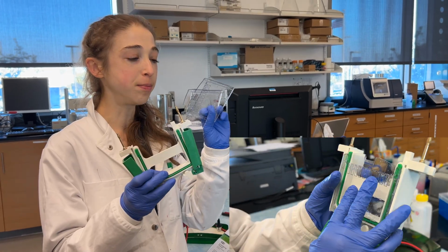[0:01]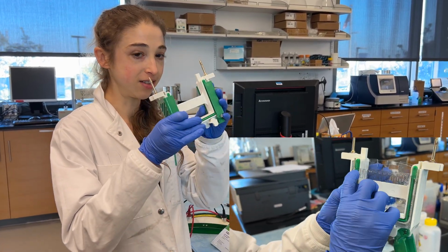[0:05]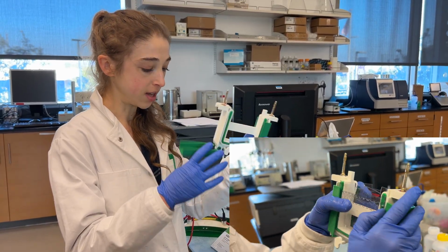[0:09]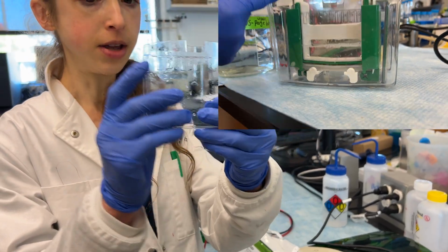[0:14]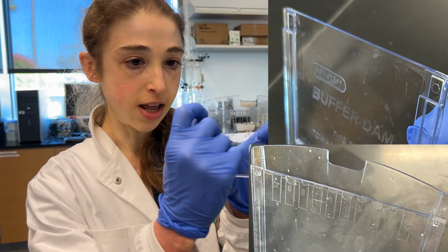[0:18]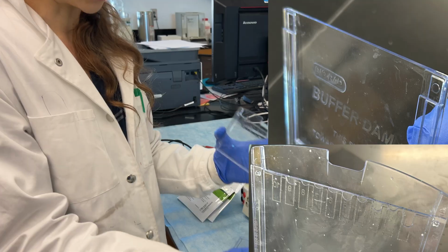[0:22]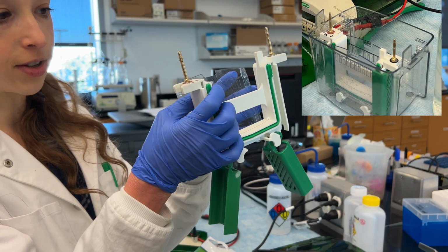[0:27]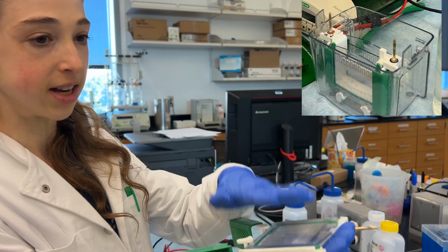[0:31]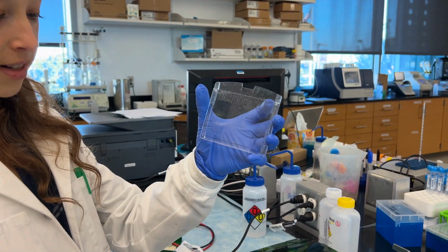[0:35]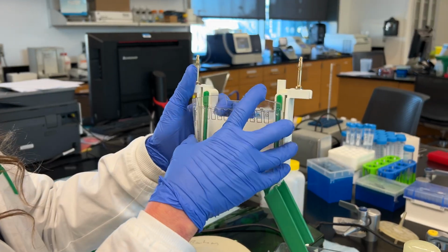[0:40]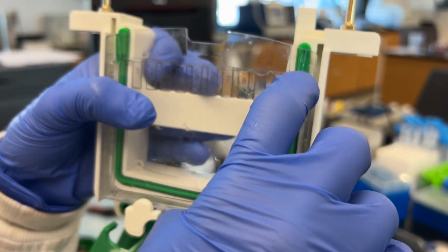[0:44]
When you're setting up your SDS-PAGE gels in one of these Bio-Rad Tetra cells, they have a tendency to leak if you don't set them up properly. So when you have your gel cassette or your buffer dam, you'll see that one side is going to be tall and the other side is going to be short. The top of this short part needs to be flush with the bottom of the rubber part. So you're going to have a gel on either side, or one side's going to have a buffer dam and one side's going to have a gel. In both cases, the short side is going to need to be in, because that short side needs to align right with the bottom of here. This is really important for preventing leaks.
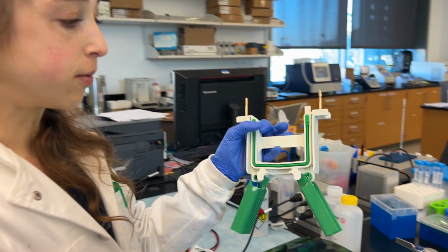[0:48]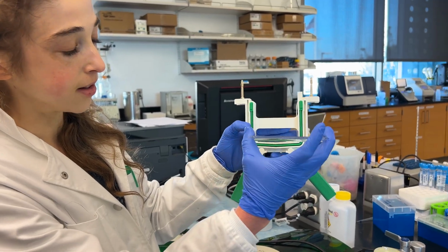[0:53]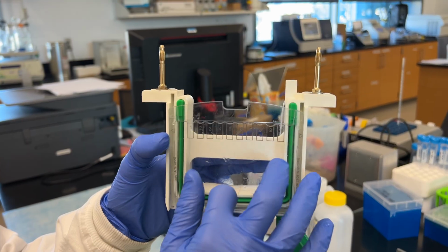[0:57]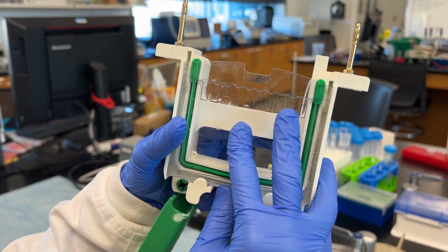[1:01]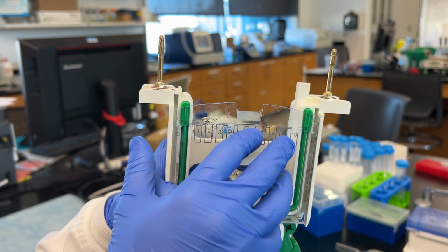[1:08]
It's hard to coordinate when you're doing both sides, but what you want to do is angle it down. So angle it down so you're here, then push back and push up. So you're right below the line. So you're right at the line. If you push too far, you're going to go above it and you're going to break the seal.
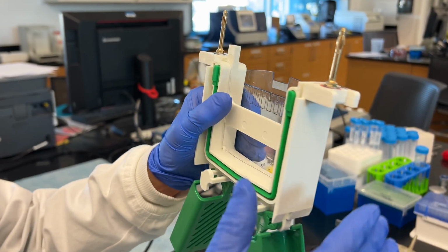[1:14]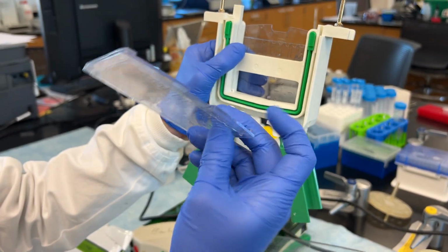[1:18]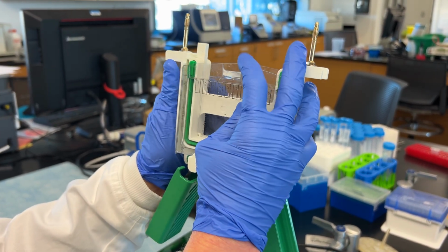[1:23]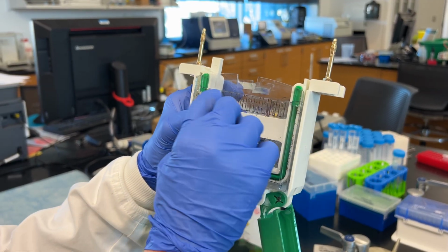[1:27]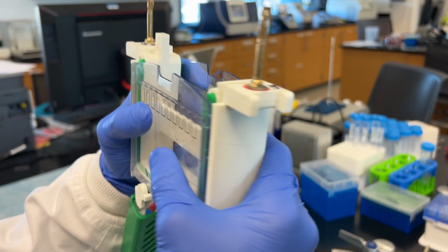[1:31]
You want to keep holding this really, really tight, flip it over, keep pressure on the back. Take your other one, short side in, angle down, push back, push up. So again, going right to the bottom, the top of the short side is right at the bottom of that green plastic. Check the other side to make sure that one is still good too.
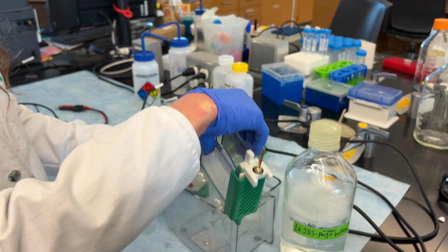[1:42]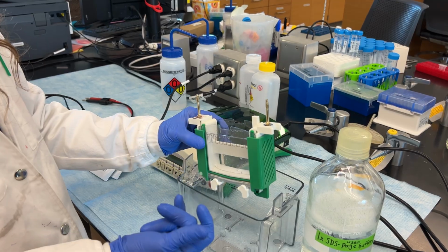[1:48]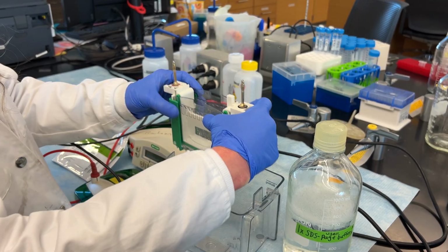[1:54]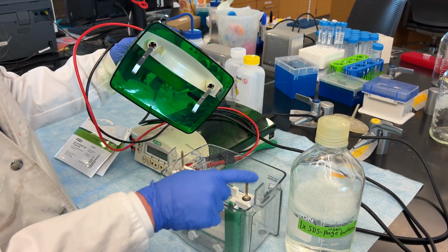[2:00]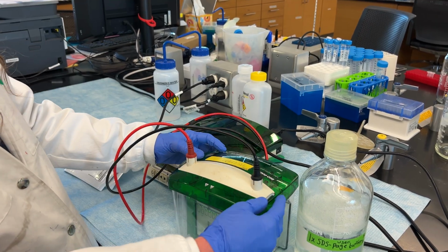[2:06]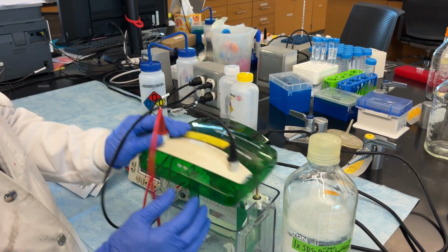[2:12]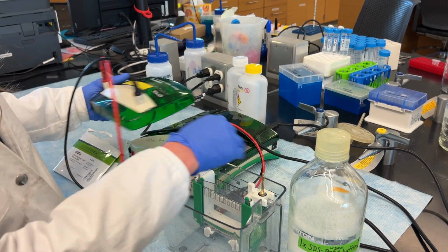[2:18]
And then you want to clamp it. When you stick it in your box, you want to make sure that you're sticking it in the way that's going to be most convenient for you to load. So you should strategize beforehand so that when the box is in, the red is to the red and the black is to the black. These electrodes are going to need to be in contact with these, so you want to make sure you have your gel in the right orientation. If I had put this on the back one, well, now the gel wouldn't fit, the lid wouldn't fit, and if I flip it around, now I've got red to black. The reason why I like to do it with the one closer is that it's easier to load.
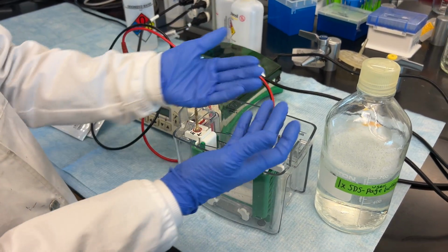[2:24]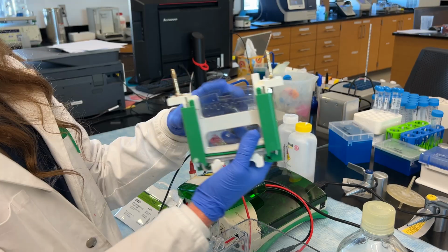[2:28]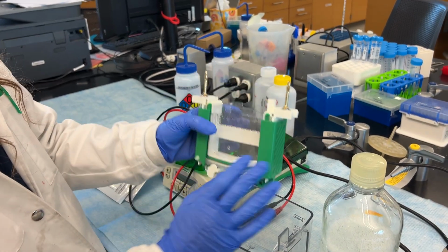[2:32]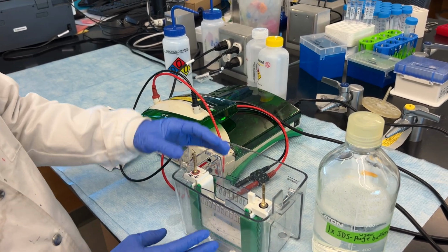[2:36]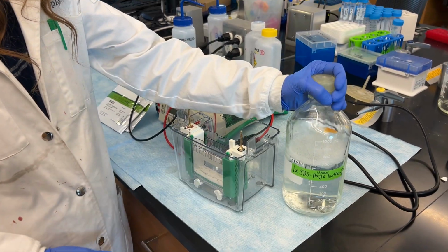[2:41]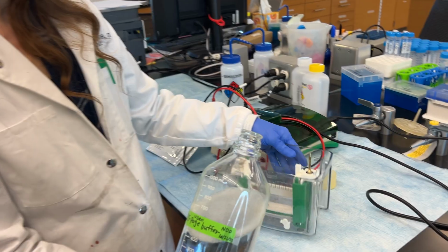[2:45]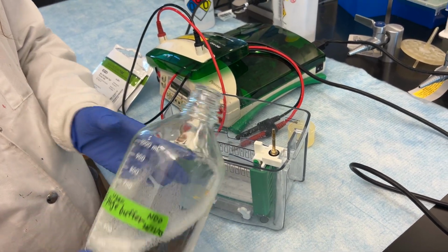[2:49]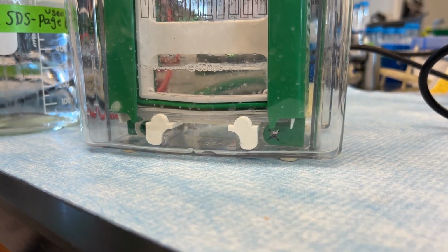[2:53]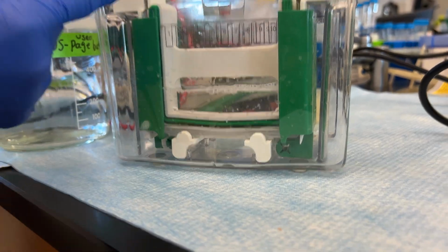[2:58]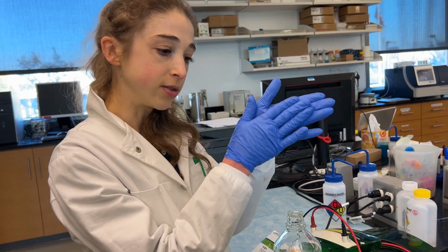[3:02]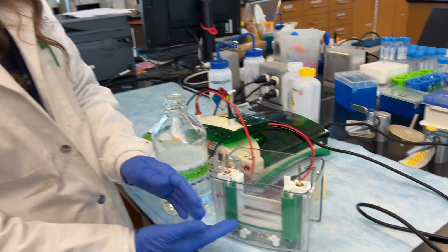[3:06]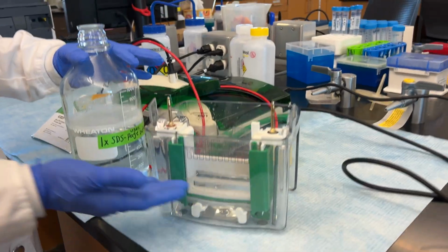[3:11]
So when you're trying to figure out which side to put your gel on, if you have a dam, think about where it'll be in the box and then put your gel on the side that's going to be closest to the plastic. In order to make sure that you actually do have a sealed cassette, take some of your buffer and pour a little of it into the center. Now look and make sure that the line is not going down, that you're not leaking. If the plastic is overlapping with that green, so it's not right flush against it, then it's not going to have a seal and it's going to be draining right now. So you want to put just a partial volume of liquid so you can see if it drains.
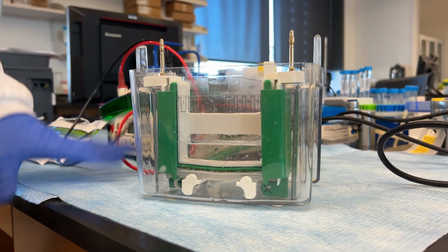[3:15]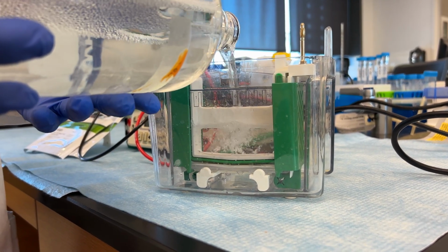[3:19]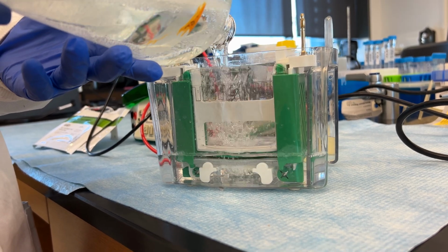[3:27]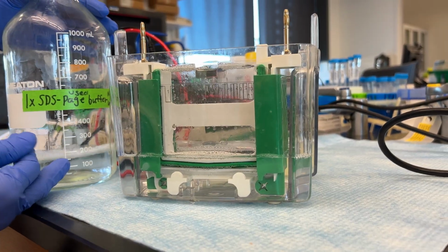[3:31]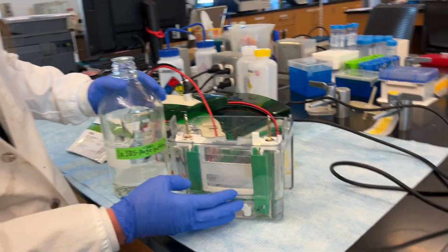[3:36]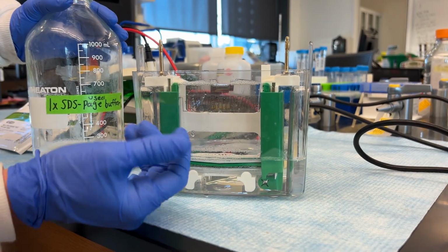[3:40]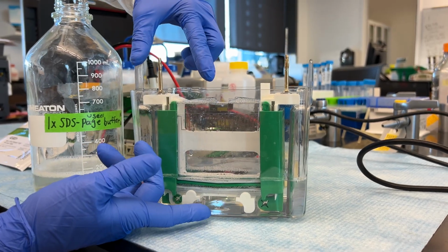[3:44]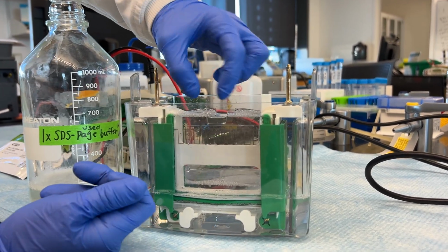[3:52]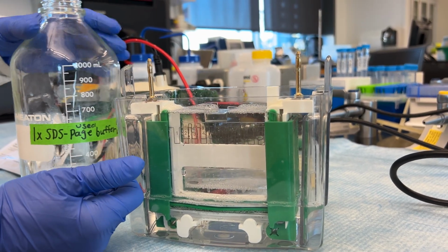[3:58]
Once you've checked and made sure it's not dripping, then you can go ahead and fill this all the way up. I like to just fill it all the way and then let it overflow. You want to make sure that it covers the bottom of the gels. I typically don't even go all the way to the 2 gel line. I just make sure it's covering the bottom, that you have the liquid in contact with the gel at the top and the bottom. That's why it's really important that this inner chamber is sealed, because even if you have the same buffer in and out, if this leaks down, then the run is not going to work.
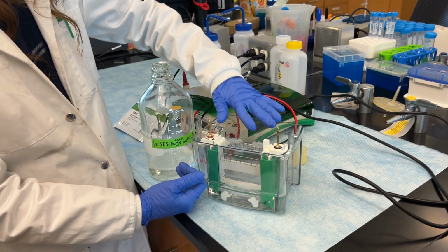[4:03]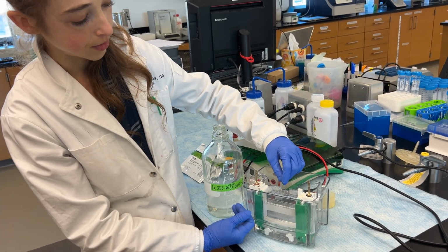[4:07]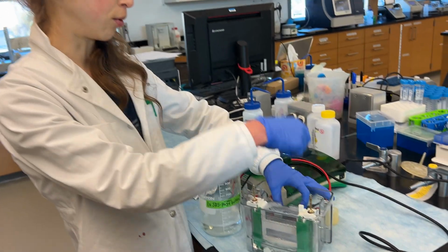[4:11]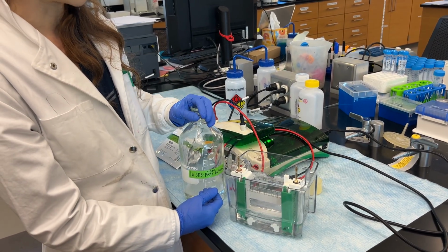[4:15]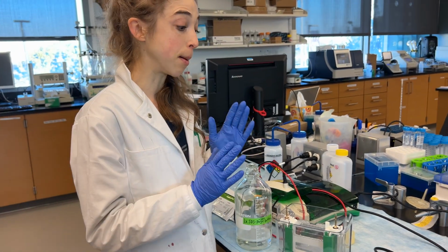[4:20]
You can salvage it if it's running partway and you realize it's leaking. You can pause the run and pour more buffer on the top. Sometimes you could also take a big syringe, pull it out and then put it back in, but then you have to keep a really close eye on it as it runs. So the best thing to do is to just check and make sure it's not leaking before you do that.
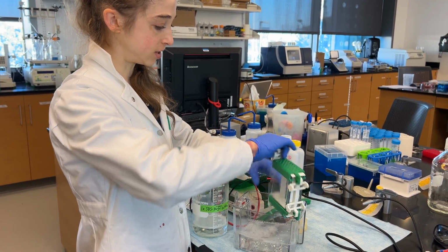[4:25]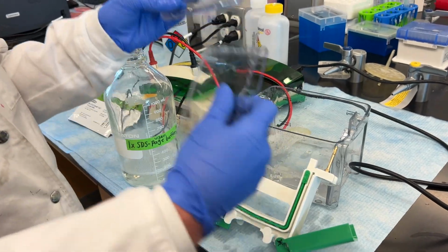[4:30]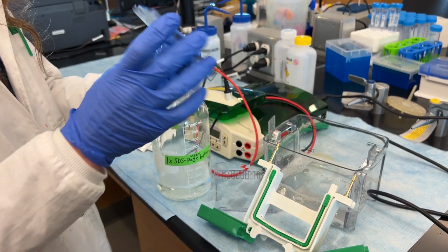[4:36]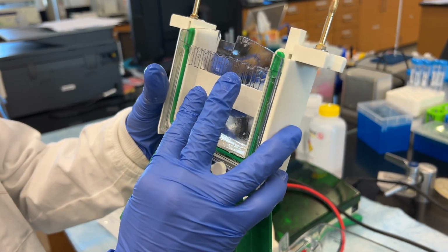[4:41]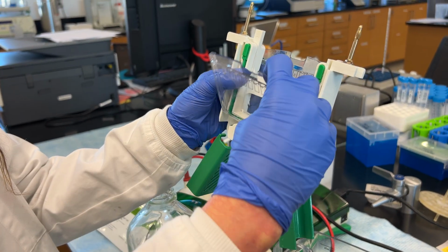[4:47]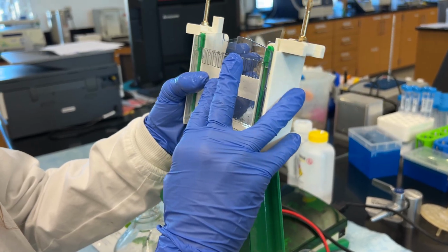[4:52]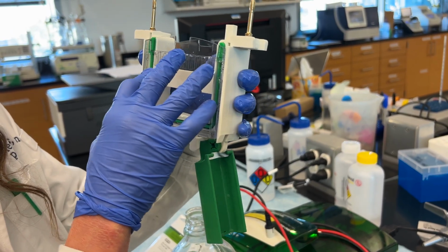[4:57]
Again, in order to set this up, you want to take your gels. These are precast gels, but it doesn't have to be precast gels. You can have your own handmade ones too. You want to go down to the bottom, back, and push up. Keep that held tightly. Now the other one, down, short side in, flip back, push up. I check both sides, make sure that the top of the plastic is right at the bottom of the green line, the green ledge, and I push these in.
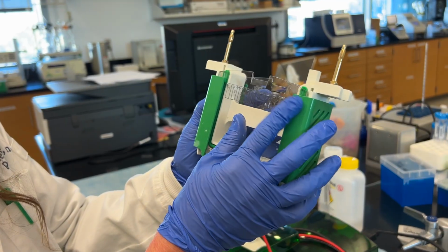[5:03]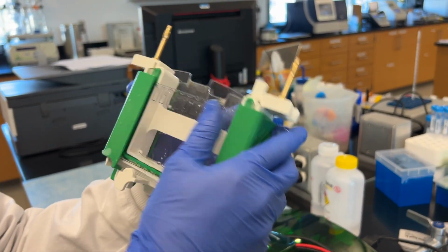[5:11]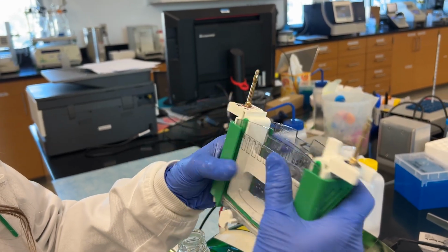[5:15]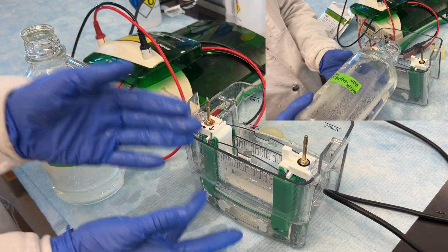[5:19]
And now I go and I look. Sometimes you might need to double check. Okay, is that one really in tight? Okay, it looks okay. It looks okay. Looks okay. And looks okay. So now I'm good to go in here. But I still am going to want to test it by pouring a little buffer into the center in order to make sure that it's good.